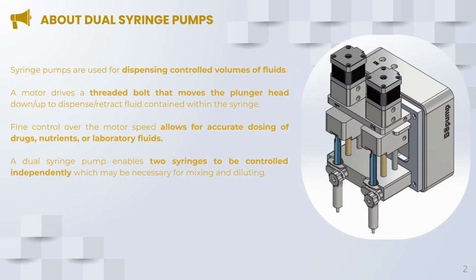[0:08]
As a background to the product, syringe pumps are used to dispense controlled volumes of fluids. A motor drives a threaded rod, which is gold-colored in the model, that moves the plunger head down and up to dispense or retract fluid contained within the syringe. By controlling the motor speed, syringe pumps can accurately dose drugs, nutrients, or laboratory fluids.
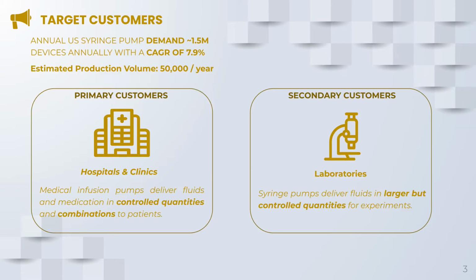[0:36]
The product variant pictured here allows for independent control of two syringes, which is useful for mixing and diluting processes. We identified two customer segments: medical facilities such as hospitals or clinics, as well as laboratory environments. While both customers require fine fluid control, hospitals may have need for diluting and mixing medication, while laboratories may not need such mixing capabilities and may instead prefer a larger range of controllable fluid volumes. These customer demand differences are what drove the features of our product variants.
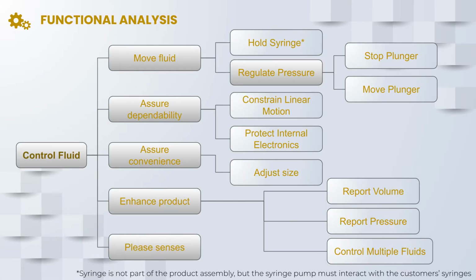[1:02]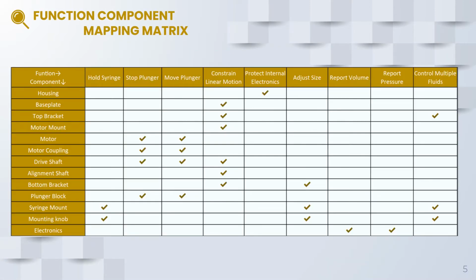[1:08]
Pictured here is our FAST diagram. We have one main functive branch that relates to controlling the fluid within the syringe. We can see that our function component mapping matrix identifies that many components share the role of constraining the linear motion of the syringe pump. We can also see that the syringe mount and mounting knob share all functions. These are great opportunities for part consolidation, which we will cover later in the presentation.
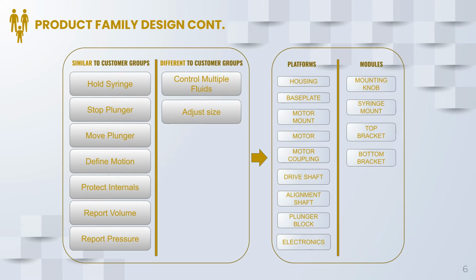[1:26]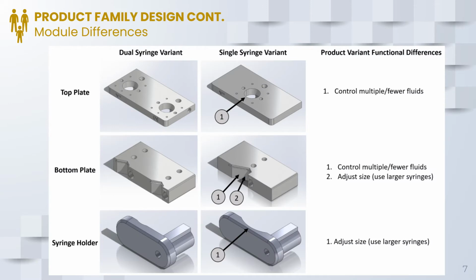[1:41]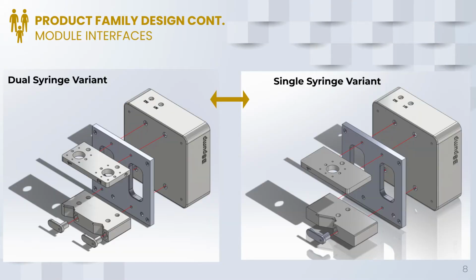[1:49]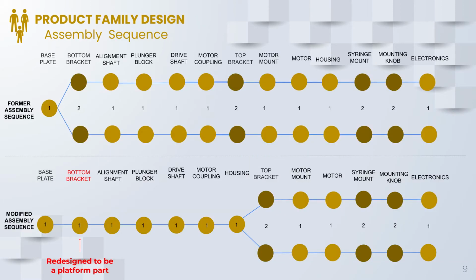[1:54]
As mentioned earlier, the two customer groups have different needs and demands. Namely, they may or may not need to control multiple fluids as well as accept larger syringes. Using the function component mapping matrix, we identified the module parts which will drive the product differences between the variants. As pictured on this slide, we can see that the different modules provide different functions to suit the different customer needs. Matching screw holes provide the common interfaces for these modules to secure to the base plate and the housing. Following the interim report, the bottom bracket was redesigned to become a platform part, allowing us to delay product differentiation. You'll see this part later in our presentation.
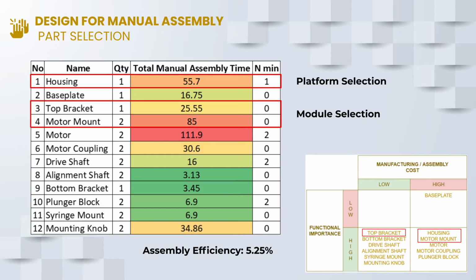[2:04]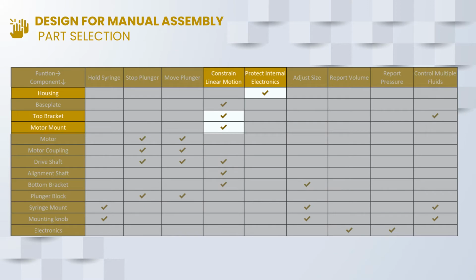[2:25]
We analyzed the assembly to find the highest impact parts on the manual assembly time. Besides the motor with its 4 mounting screws, which is a purchased part, the next top two parts were the motor mount and the housing. As we can see on the quad chart, these parts are ideal for redesign. We also selected the top bracket because we saw an opportunity for part consolidation. As we can see, the top bracket and motor mount share the same function to constrain the linear motion of the plunger, so we look to combine the two components.
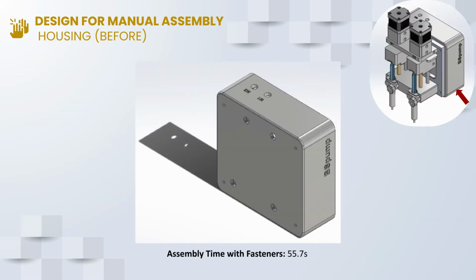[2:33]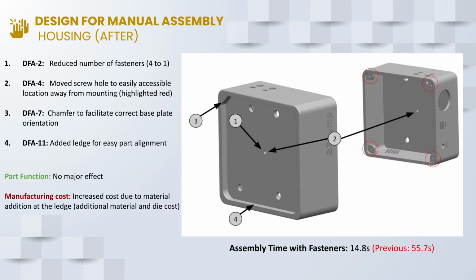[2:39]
Starting with the housing, the original design took 55 seconds to mount it to the base plate. We improved the design for manual assembly by reducing the number of fasteners while moving it to an easily accessible location. We also added some part features to assist in orienting and aligning the part to the base plate. This had no impact on the function of the component, but does increase the overall cost due to the ledge added to the part. We were able to reduce the assembly time from 55.7 seconds to 14.8 seconds.
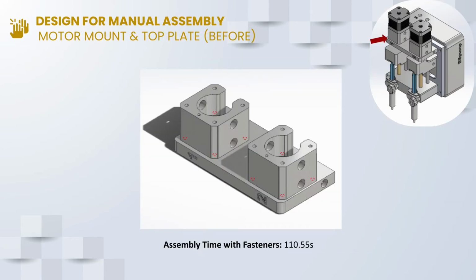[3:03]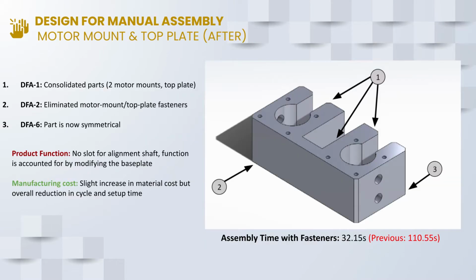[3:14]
Now moving on to the motor mount and top plate, we can see that 8 screws are required to secure the motor mounts to the top bracket, shown with the red dashed circles. These screws drove the assembly time to be 110 seconds. By consolidating these parts, we eliminated the fasteners entirely. We also made the part symmetrical so it could be flipped in either orientation during assembly. The assembly time was reduced from 110 seconds to 32 seconds. The redesign lost the holes in the top bracket for the alignment shaft, so we modified the base plate and plunger blocks to make up for the lost functionality.
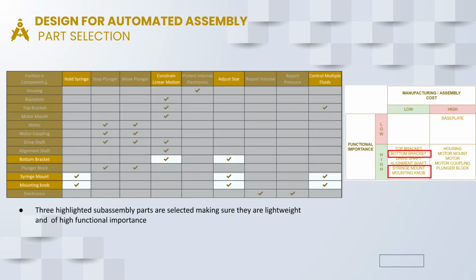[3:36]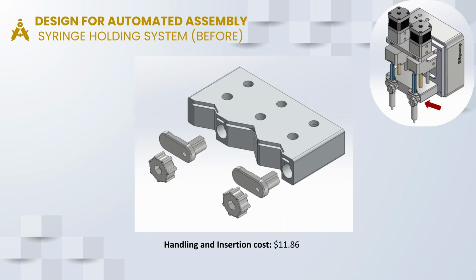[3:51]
For automated assembly, we selected the subassembly of the bottom bracket, syringe mount, and mounting knob to improve for automated assembly. The function component mapping matrix shows that the syringe mount and mounting knob share all functions, a strong indicator for the opportunity for part consolidation. Here we can see the before design of the bottom bracket assembly. You can see that it's slightly different from the original bottom bracket, as it was modified after the interim report to become a platform part that delays differentiation. It cost $11.86 to automatically assemble.
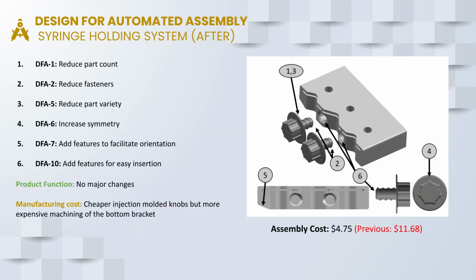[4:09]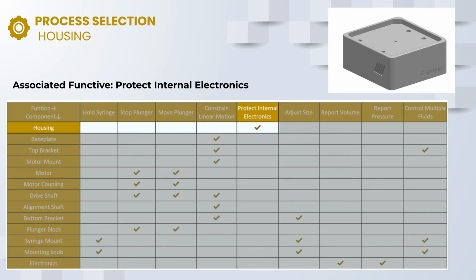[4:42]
We consolidated the syringe mount and mounting knob. This eliminated the fasteners originally used to secure the assembly and reduced part variety. We made the part symmetrical to aid automatic feeding, and we added chamfers for easy insertion. We also added a feature to improve alignment for the bottom bracket. This reduced the cost from $11.68 to $4.75. These improvements had no impact on product function, but we expect a mixed impact on manufacturing cost due to cheaper plastic knobs and expensive machining for the bottom bracket. Now let's look at the process selection for manufacturing of the housing.
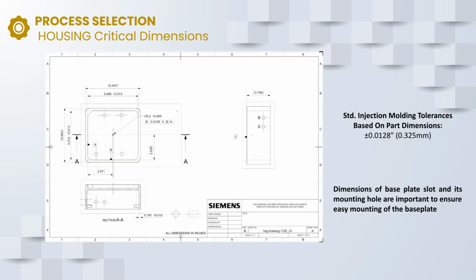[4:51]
The main function of the housing is to protect the internal electronics. Here are the major dimensions of the housing. The manufacturing tolerance of 0.0128 inches was standard injection molding tolerances based on the current part dimensions. The most critical dimensions are the slot size and mounting hole location for the base plate to ensure it's easily mounted and secured to the housing.
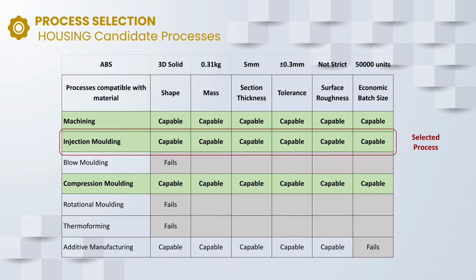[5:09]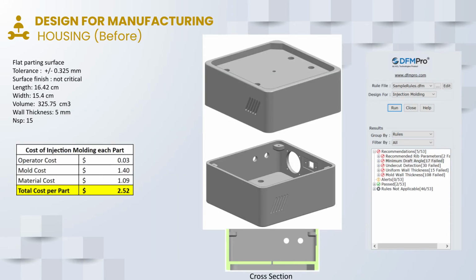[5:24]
The housing was to be made out of ABS. Based on the size, dimension, tolerances, and batch size, we narrowed down the manufacturing processes to machining, injection molding, and compression molding. In the end, we chose to injection mold the housing. The current housing had many issues pointed out by DfM Pro.
After the design for assembly changes, DfM Pro suggested to improve the rib parameters, draft angle, to modify undercuts, maintain uniform wall thicknesses, and improve the mold wall thickness. On analyzing the manufacturing cost, we calculated the operator cost to be 3 cents, the mold cost to be $1.4, and material cost to be $1.09, adding up to $2.52.
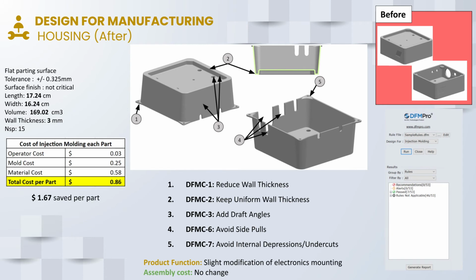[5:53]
We implemented the changes suggested by DfM Pro. We were able to slightly reduce the wall thickness, make sure to maintain uniform wall thickness throughout the part, add draft angles, try to avoid side pulls as much as possible, and avoid internal depressions and undercuts. On analyzing the manufacturing cost, we calculated the operator cost to be 3 cents, mold cost to be 25 cents, and material cost to be 58 cents, adding up to a total of 86 cents, saving us $1.67.
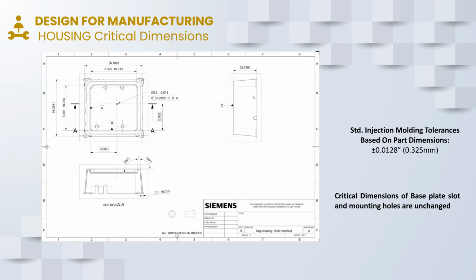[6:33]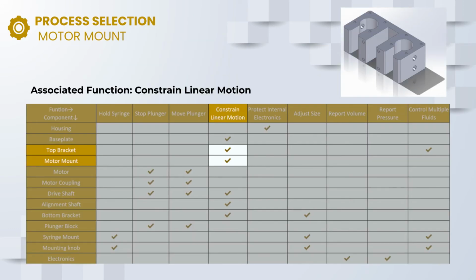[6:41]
These DfM changes had a slight effect on the electronics mounting that will require some changes to the electronics compartment. There was no overall effect on the assembly cost. The critical dimensions of the slot size and mounting hole location for the base plate remain the same after the DfM changes. Now let's look at the process selection for the manufacturing of the motor mount.
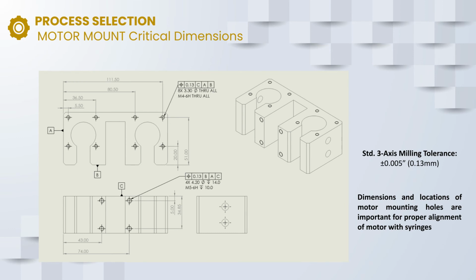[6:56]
The motor mount and the top bracket, which we combined during the design for assembly, has an important role of constraining linear motion, the most common function in the function component mapping matrix. Here are the major dimensions of the motor mount. The manufacturing tolerance selected is 0.005 inches, the standard manufacturing tolerance for 3-axis CNC machining.
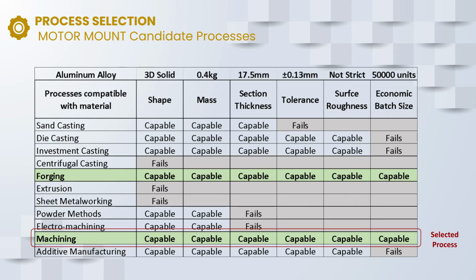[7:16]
The critical dimensions here are the dimensions and locations of the motor mounting holes to ensure correct alignment of the motor with the syringes. The motor mount was to be made out of aluminium alloy. Based on the size and weight, dimensions, tolerance, and batch size, we narrowed down the manufacturing processes to machining and forging. In the end, we chose to machine the motor mount.
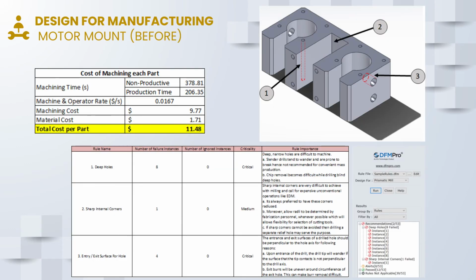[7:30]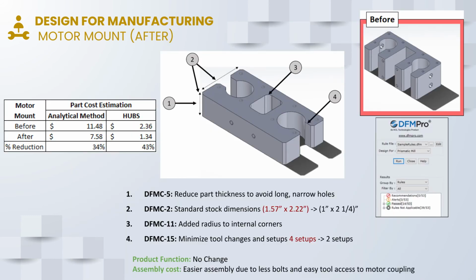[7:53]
The current motor mount had many issues pointed out by DfM Pro. This included the presence of long deep holes, sharp internal corners, and difficult entry and exit surfaces for holes being drilled. We also analyzed the manufacturing cost and calculated a machining cost of $9.77 and a material cost of $1.71, adding up to $11.48.
With the help of the changes suggested to us by DfM Pro, we reduced the part thickness to avoid long narrow holes, and stuck to standard stock dimensions. We added radiuses to internal corners and minimized tool changes and setups from 4 setups to just 2 setups. And through this, we were able to reduce the cost to $7.58, a 34% reduction based on our analytical method, and to $1.34 suggested by Hubs, a 43% reduction based on their calculations, assuming a 20% profit margin.
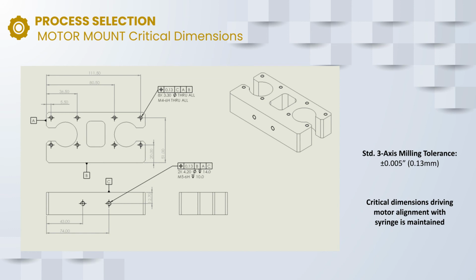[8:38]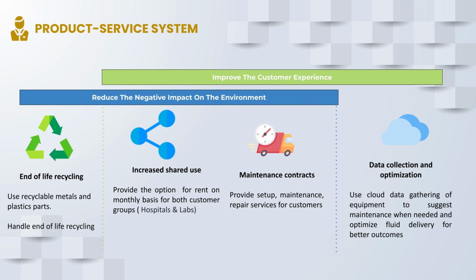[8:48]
These changes had no effect on the product function and actually improved the assembly cost due to easier assembly due to less bolts and easy tool access for the motor coupling. After making these modifications, we were still able to maintain the critical dimensions of the size and location of the motor mounting holes in order to maintain the right motor syringe alignment.
Along with our product, we plan to offer services to improve customer experience and reduce the impact on the environment. We plan to use more environmentally friendly materials and handle end-of-life recycling. We also want to offer a rental option to increase shared use and provide maintenance contracts to increase the life of the product. In addition, we plan to offer data collection and optimization services to suggest maintenance whenever needed and optimize fluid delivery for better outcomes.
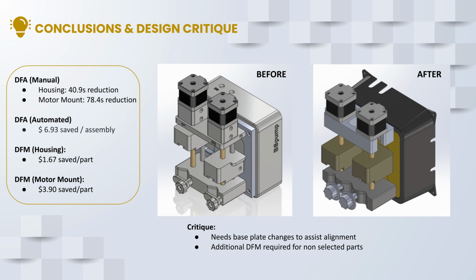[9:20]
To summarize, after redesign, we were able to significantly reduce manual assembly time of the housing and motor mount. We cut down automated assembly costs of the bottom bracket and syringe mounting system, and implemented DfM guidelines to improve manufacturability and reduce the manufacturing cost of the machined motor mount and injection molded housing.
There are also a few critiques for our design. Our design changes led to a need to modify other parts such as the base plate to assist constraining the plunger. We also need to conduct additional DfM for parts we did not choose. And if we were to start all over again, we would put more emphasis on the FAST diagram and function component mapping matrix earlier, as it served as a backbone for our redesign.